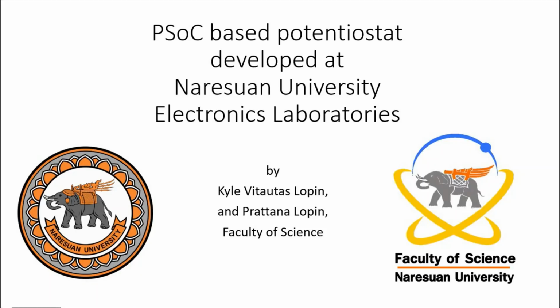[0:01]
In this video, I'll show how to develop a potentiostat from a programmable system on a chip. This potentiostat was developed at Naresuan University Electronics Laboratory by Kyle and Pratana Lopin in the Faculty of Science.
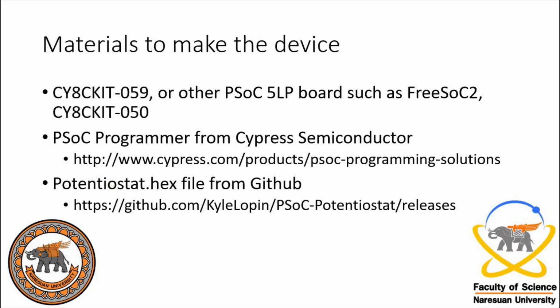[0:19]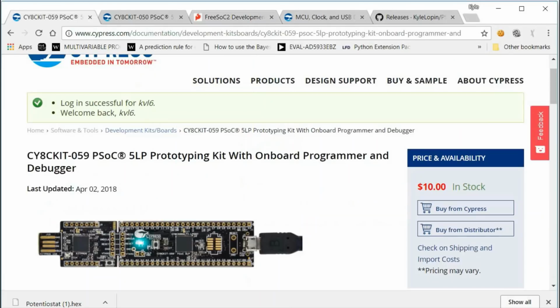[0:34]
To get started, we're going to need a PSoC 5 LP board. In this video, I'll show how to use a CY8CKIT-059 to make the device. You can also use the CY8CKIT-050 or FreeSoC 2. So the 059 kit is only $10 at the Cypress Semiconductor store. You can also find it at other electronics distributors such as Mouser and DigiKey, but the price may vary.
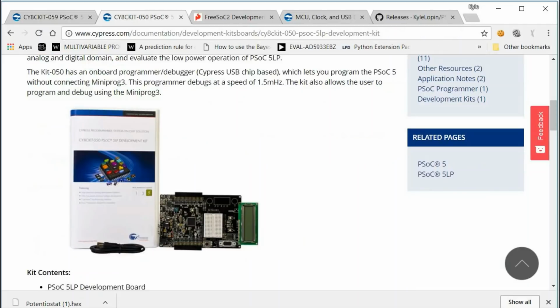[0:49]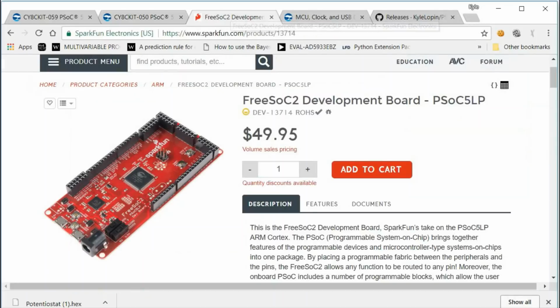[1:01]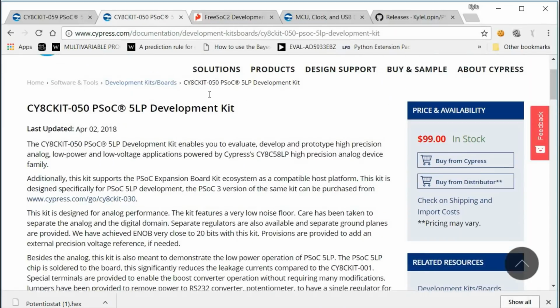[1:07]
You can also use the CY8CKIT-050, but it does cost more. But it does have some peripherals such as an LCD that you can use to develop, or the FreeSoC 2 from SparkFun. For this board and the CY8CKIT-050, you will not have to solder any parts on as the headers are already soldered on these devices.
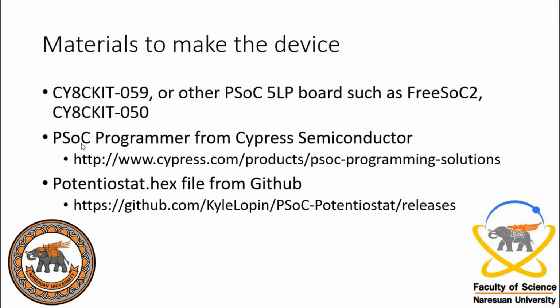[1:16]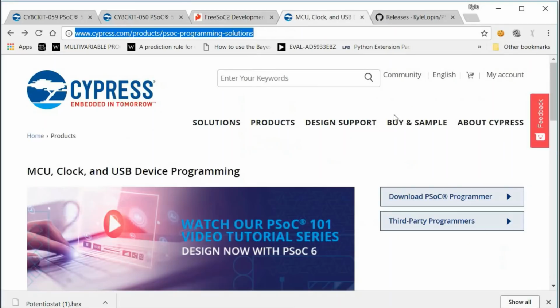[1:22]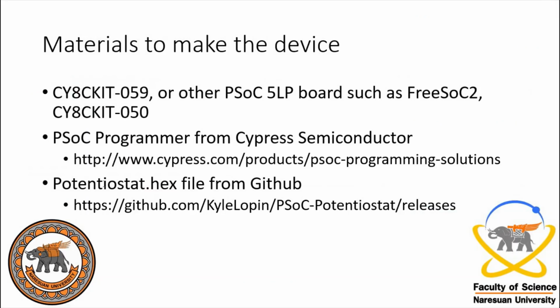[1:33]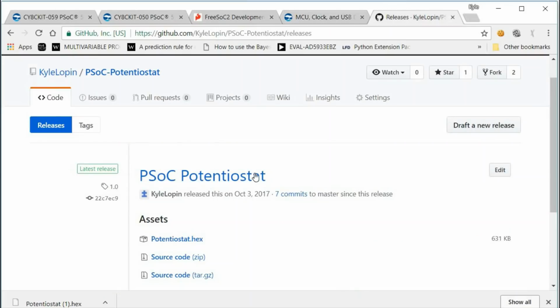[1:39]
The other thing we'll need is the PSoC Programmer from Cypress Semiconductor. You can get it from this webpage and the link will be in the description below. So you have to download here. You will have to sign in to Cypress Semiconductor to download it, and you'll also need the Potentiostat.hex file, and you can find that at my GitHub repository. So I will be doing the version 1.0 here, but updates may be loaded in later that you can look for. A file of this will also be listed with the PLOS One paper that you can grab from there.
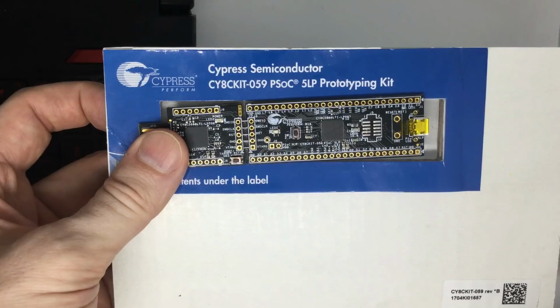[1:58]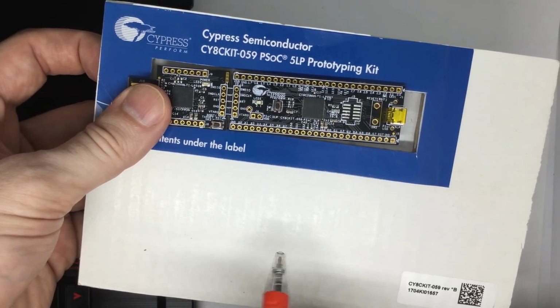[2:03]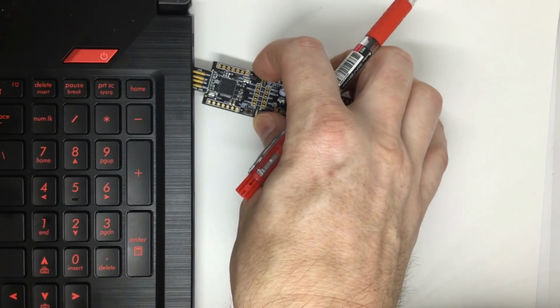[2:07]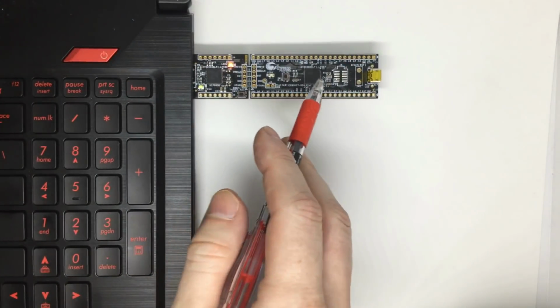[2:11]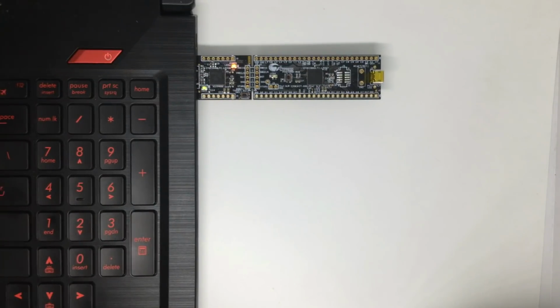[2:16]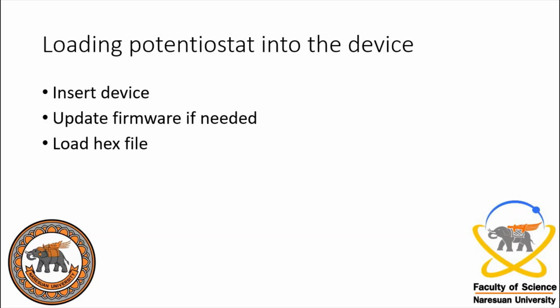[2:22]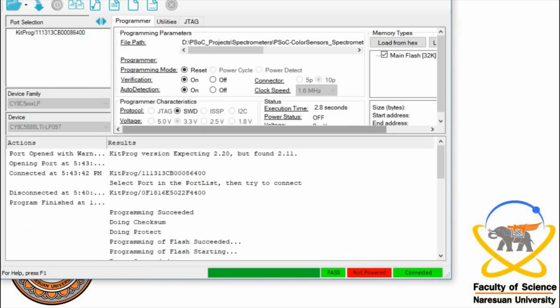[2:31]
So now you take the PSoC 5 LP development board and you plug the male end into the USB port of the computer, and now we're ready to program the PSoC 5 LP. So now the device is inserted into the computer. You will wait for some pop-ups if the driver is installing. Then you can go to PSoC Programmer, and if it's a new device, it will usually say that this programmer is currently out of date and you have to update the firmware on the programming device. So you click OK.
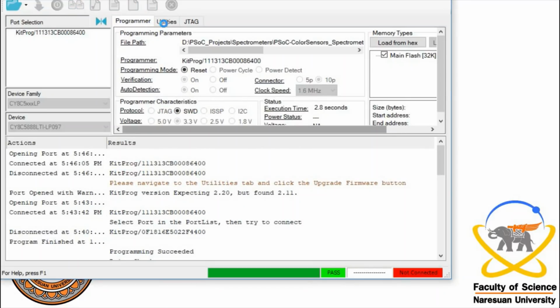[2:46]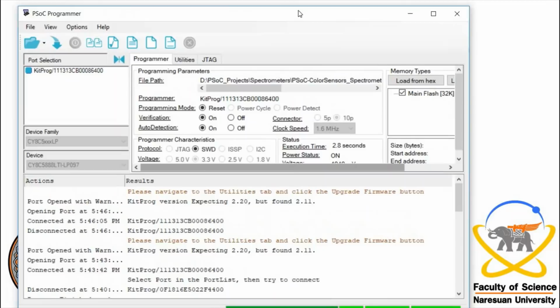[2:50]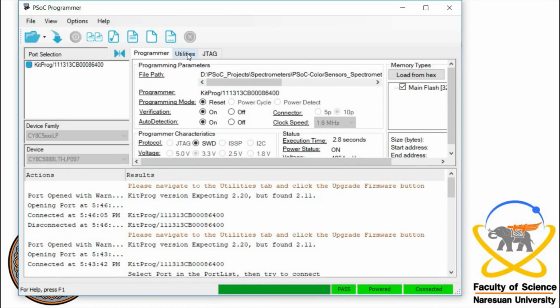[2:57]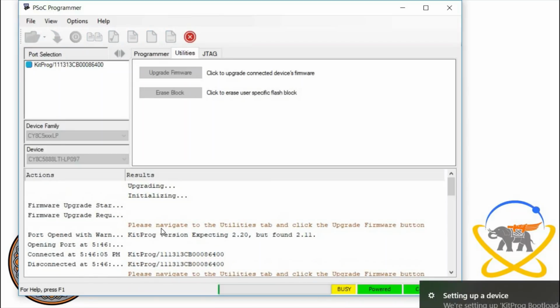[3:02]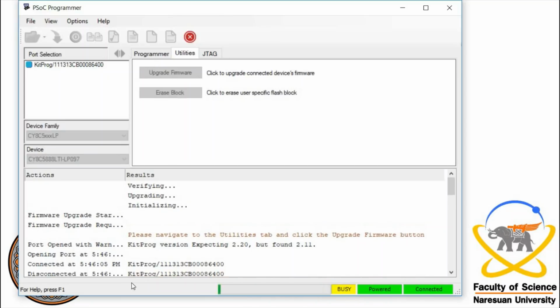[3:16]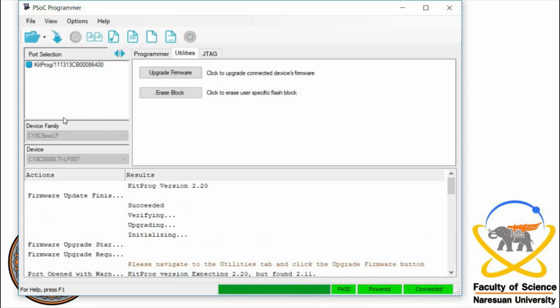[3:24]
You want to make sure that it's connected. And now to update it, we go to Utilities, Upgrade Firmware. Now it's verifying it. Okay, the device is now ready.
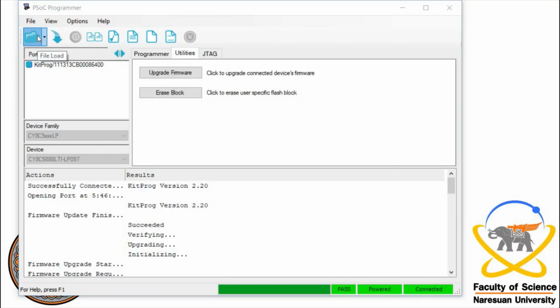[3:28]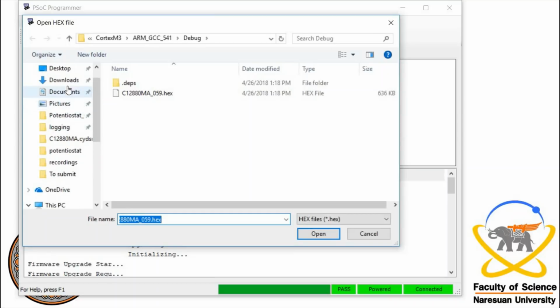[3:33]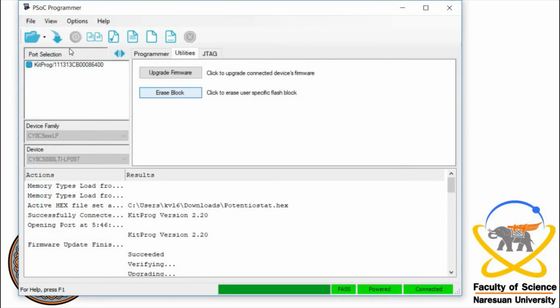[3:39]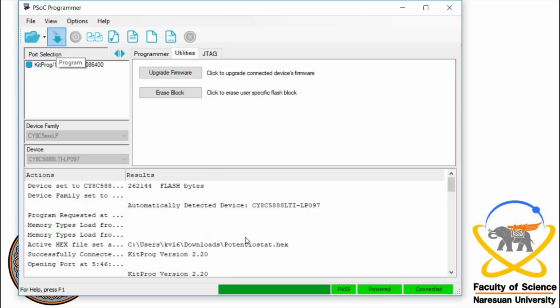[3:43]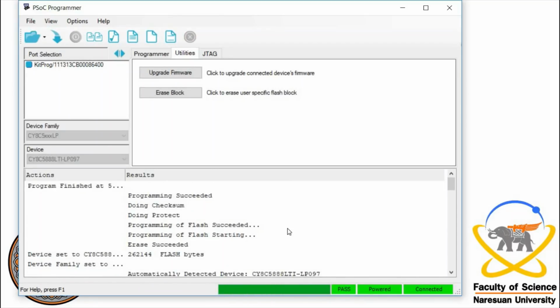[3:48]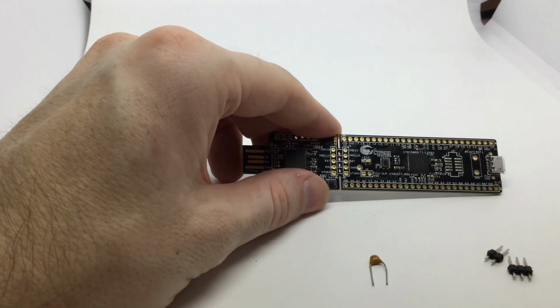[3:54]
So we're going to load the hex file. So we're going to go File, Load. We're going to go to Downloads, and we're going to get the hex file that we got previously. We're going to open it and then program. And now the potentiostat is programmed into the PSoC 5. Okay, now we have the potentiostat programmed into the PSoC 5.
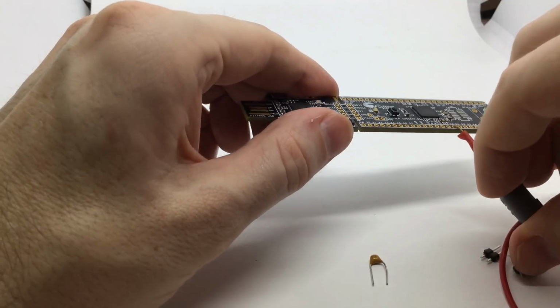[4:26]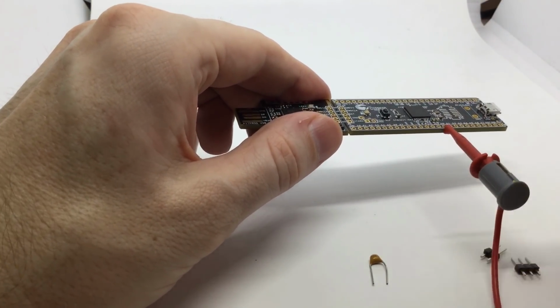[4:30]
We're going to add a capacitor between a ground pin and pin 3.1 so that we can use the 12-bit DAC with a 1 millivolt resolution. And also to connect the electrodes, so we have the reference electrode at pin 3.4, the counter electrode at pin 3.6, and the working electrode at pin 0.0. So either you can use easy clips, such as these, and these can connect straight to the pin. And now you can connect the electrode using these.
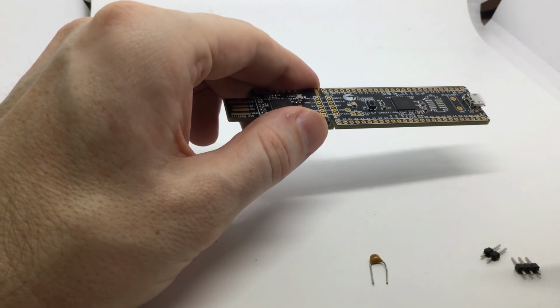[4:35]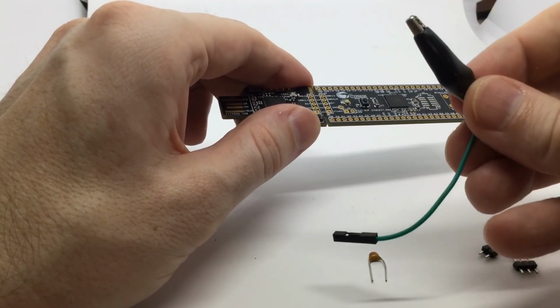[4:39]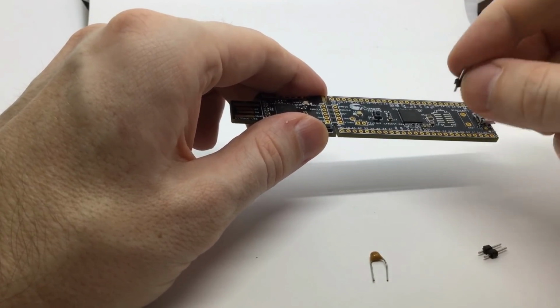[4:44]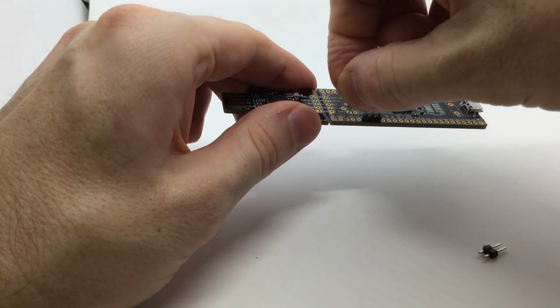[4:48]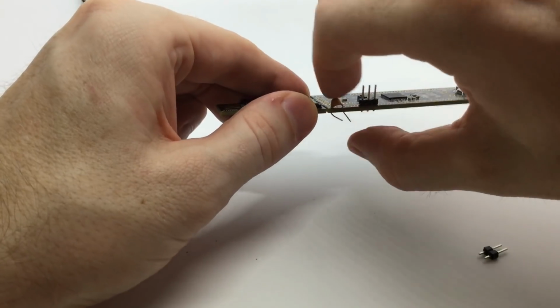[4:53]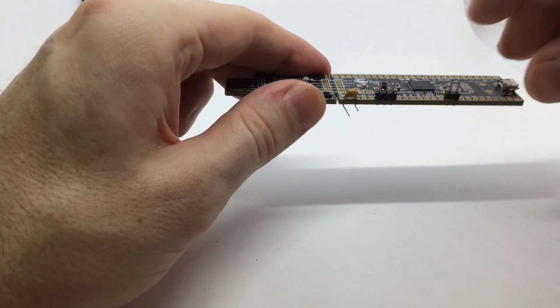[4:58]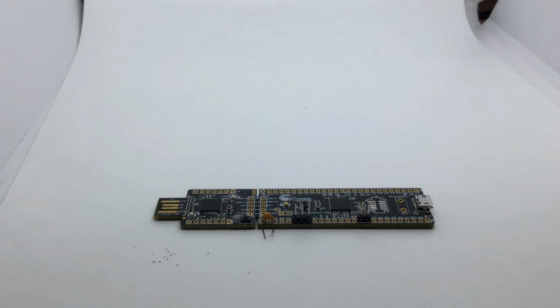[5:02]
Or sometimes I will also use alligator clips attached to female headers. So to use these and to interchange them fast, I use these headers here. So we're gonna add these in, and the capacitor for the DAC. And if you bend the capacitor leads, it will hold it in place while you solder it. And now we have this. Now I'll start the soldering gun and we'll solder everything together.
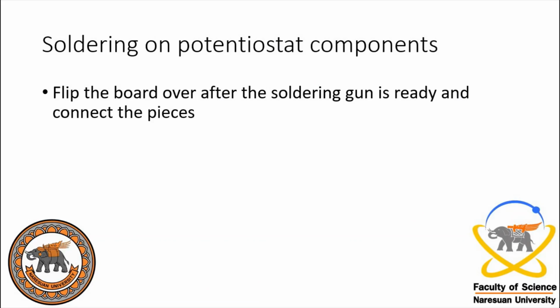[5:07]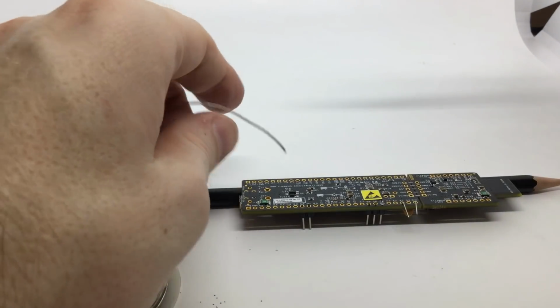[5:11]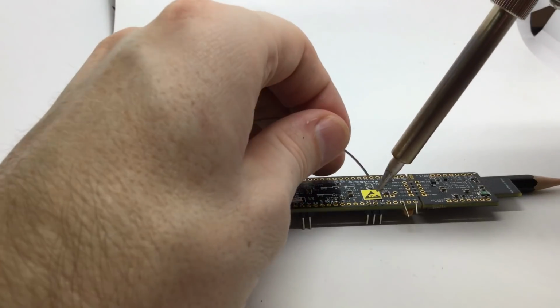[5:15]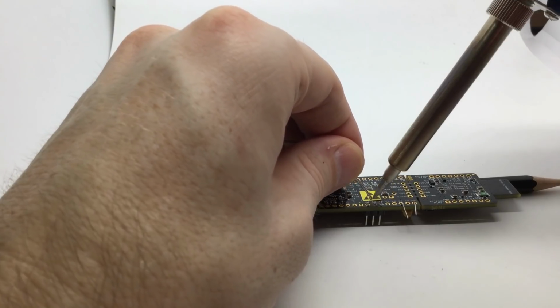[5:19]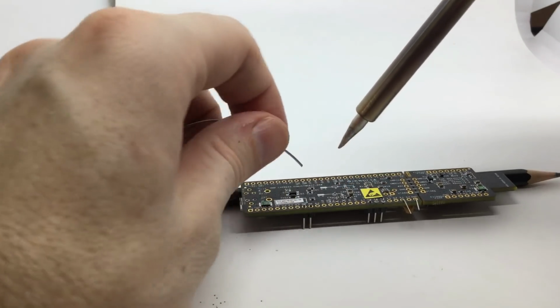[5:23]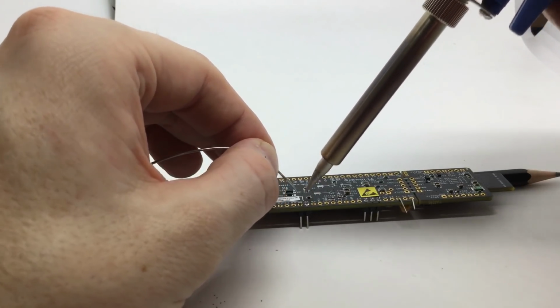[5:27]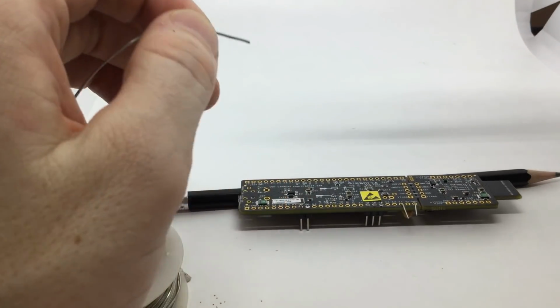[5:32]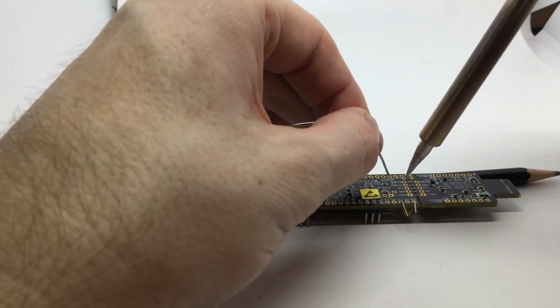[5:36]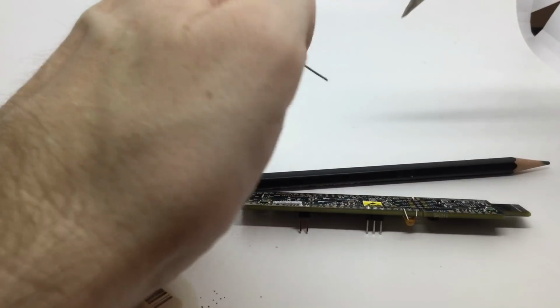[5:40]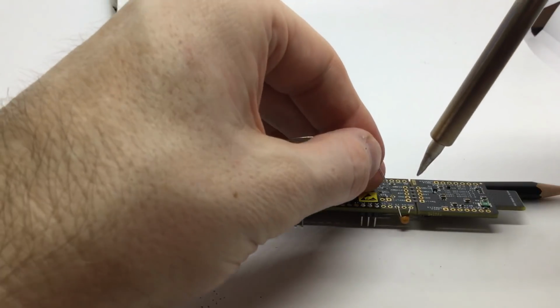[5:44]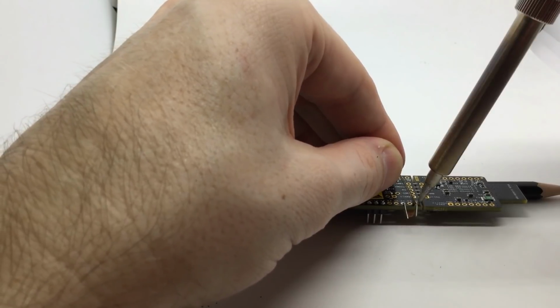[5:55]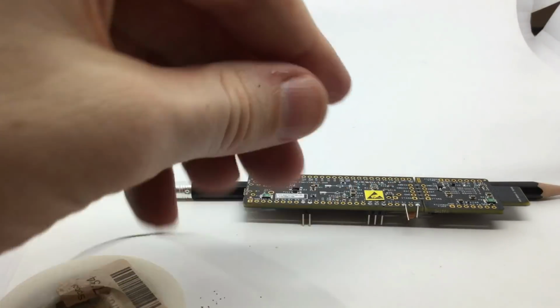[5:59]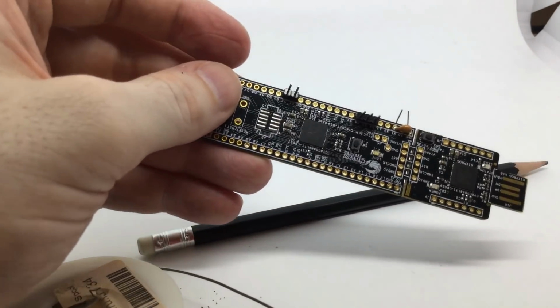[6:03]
Okay, now when your soldering iron is ready, you can solder the headers on. So I already soldered one. There's the other one. And the soldering iron is maybe a little too hot, but it's okay. And then I'll solder on the capacitor. Okay, all of the headers and the capacitor are on now. I'm gonna cut these leads off because I don't need them anymore, and now the device is ready to be used.
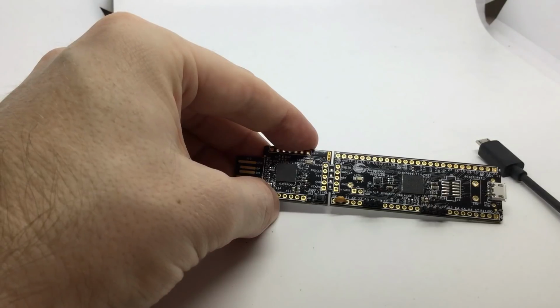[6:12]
Okay, so now we have the device made. When I went to test the device, I realized in the last video I put the headers in wrong. I put it in 01 and 02. So I added a new header to 00 and 15.5. That's fine. You can add as many extra ones as you want as long as you have pin 00, so you can connect the working electrode to it.
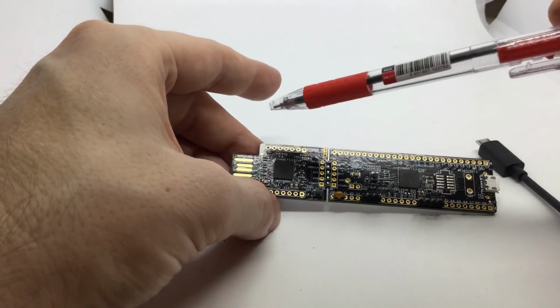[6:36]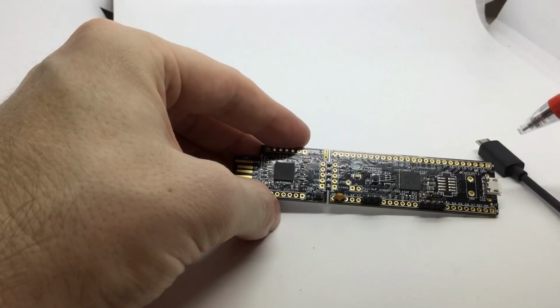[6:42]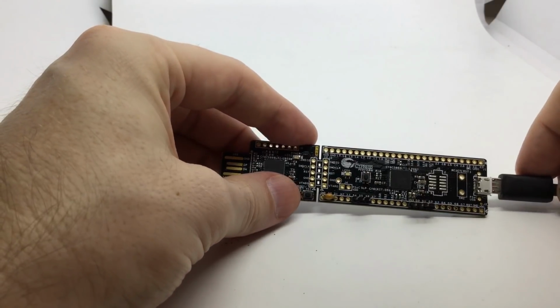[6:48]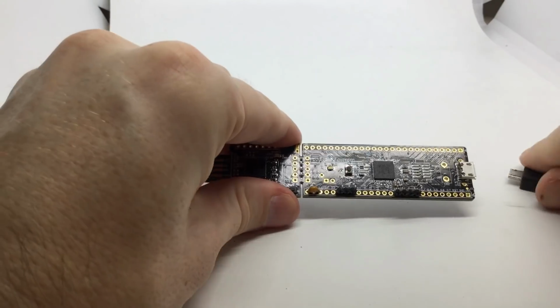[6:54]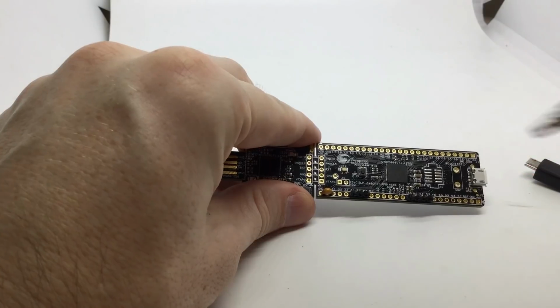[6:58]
So we programmed through this end of the development board, but to connect the device to the computer to use the potentiostat, we use this USB port. So we're gonna connect a micro A USB port to this end. But this is a development board, so you have to watch out. There are exposed reset pins. And if you're doing electrochemical experiments, there's some solution that could interfere with the electronics.
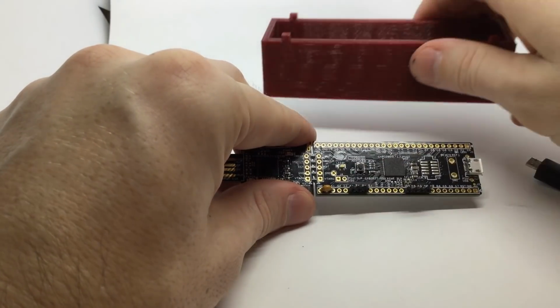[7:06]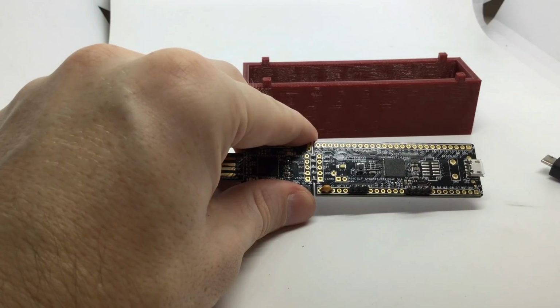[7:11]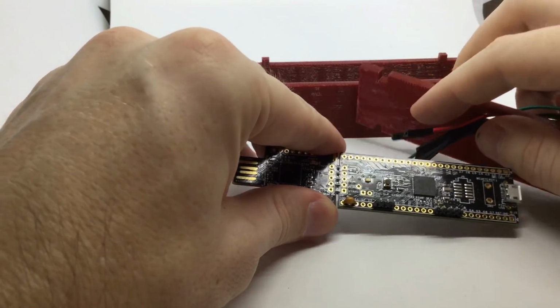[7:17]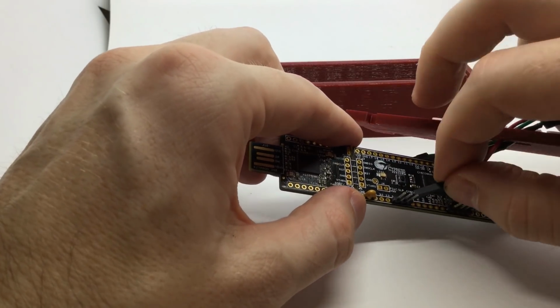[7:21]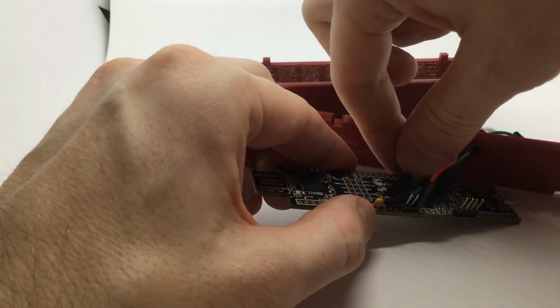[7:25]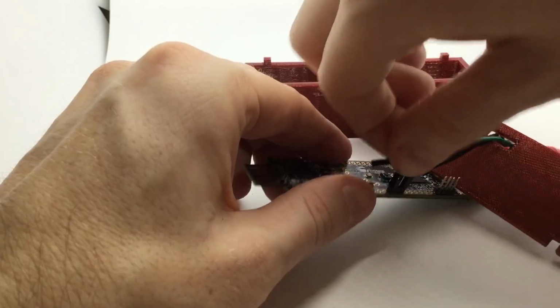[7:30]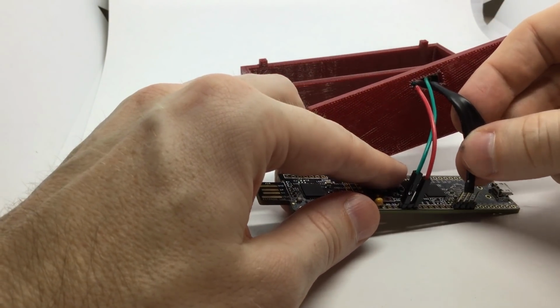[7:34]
So I like to use an enclosure. So to use the enclosure, and I'll have a link to this in the description if you want to print this out, it's just in a 3D printer. So I put the electrodes to the enclosure top first, and then I connect the counter to pin 3-6, the reference to pin 3-4, and the working to pin 00.
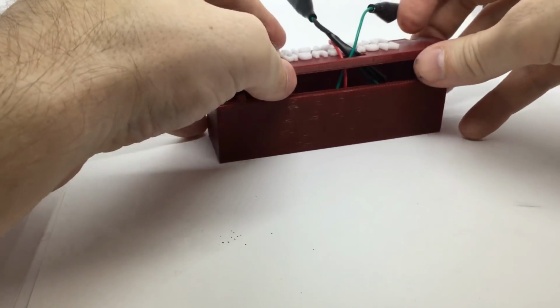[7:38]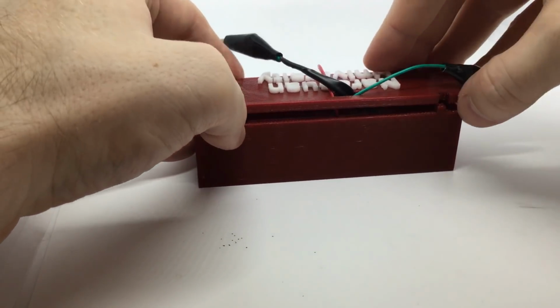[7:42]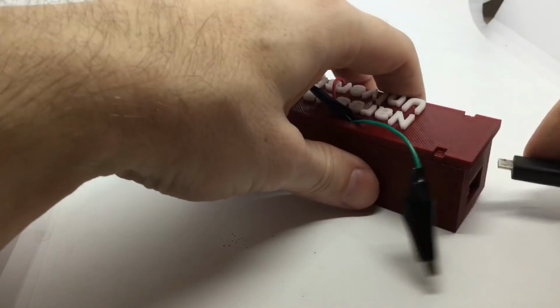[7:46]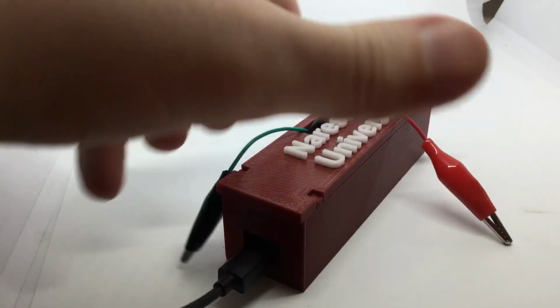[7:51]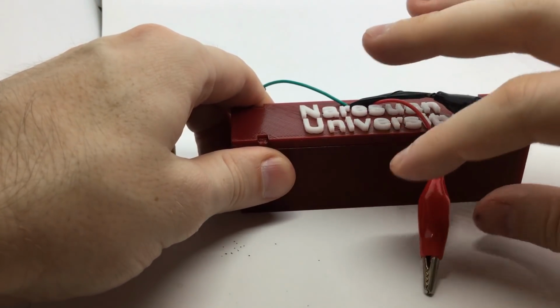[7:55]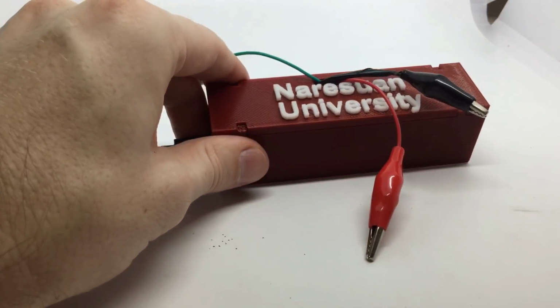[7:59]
So now I can put this in the enclosure, and we'll be looking to make a different enclosure with banana clips instead. And now you can connect this device to this USB port, and now you have a potentiostat that's working with the counter, reference, and working electrodes. So now we have the device plugged in, but we need to control it somehow.
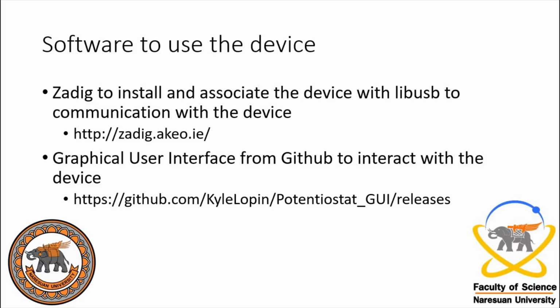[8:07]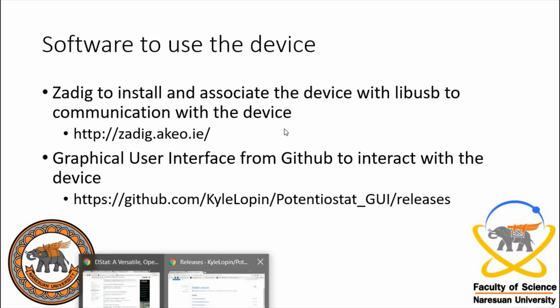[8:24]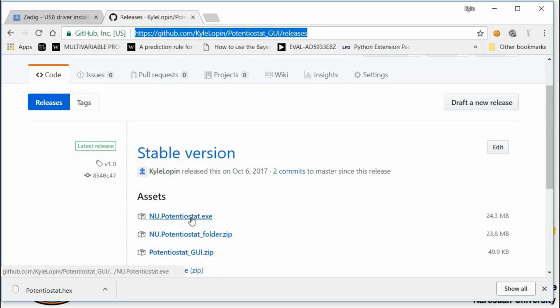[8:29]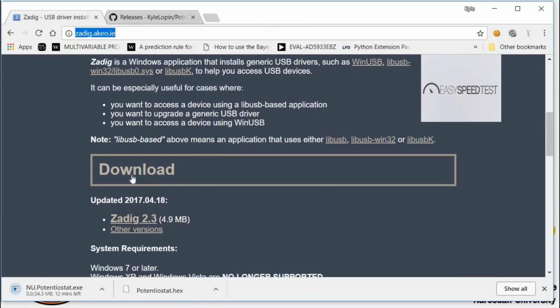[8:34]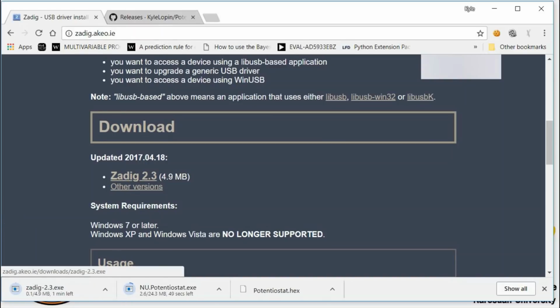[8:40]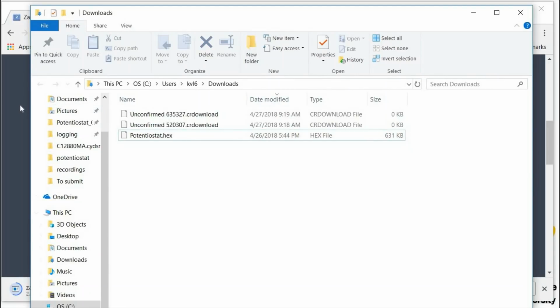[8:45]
So to do that, we made a graphical user interface for the potentiostat, and it can be found at GitHub at this link that will be in the description below. But to use the USB port through it, we're going to use Zadig to install the driver for it. So you can go here to find the potentiostat graphical user interface. So we'll download this, and we'll also download the Zadig. We'll wait for those to download.
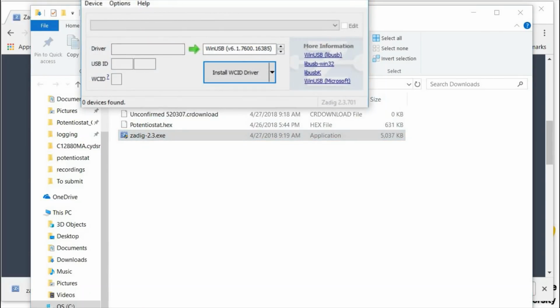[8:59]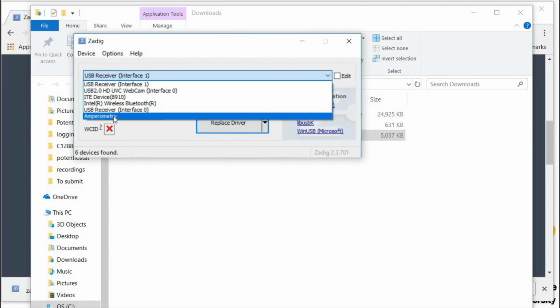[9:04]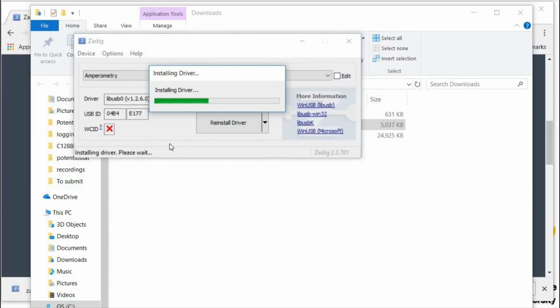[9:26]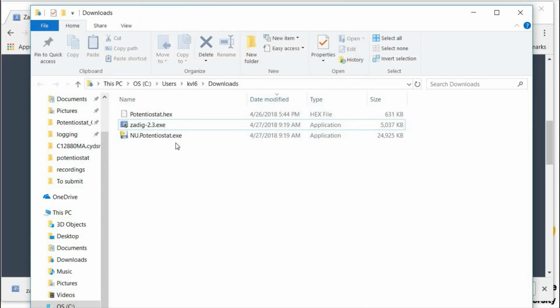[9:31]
So you run Zadig. You allow it to make changes, then you go to options, list all devices, and you will see either amperometry or NU potentiostat listed. And the driver here is already associated with it is correct, but if this does not say libusb0, you want to do libusb win32, and then this will say install driver. Now the graphical user interface will associate with the device.
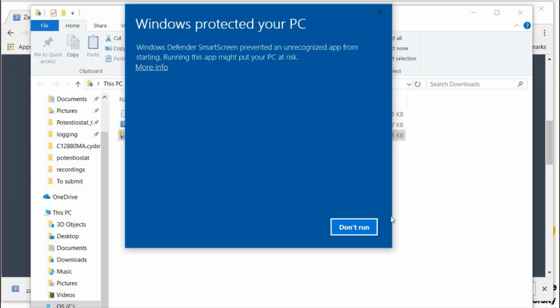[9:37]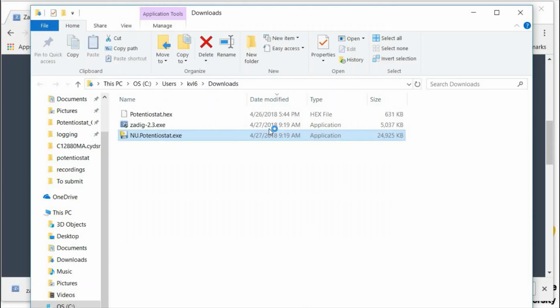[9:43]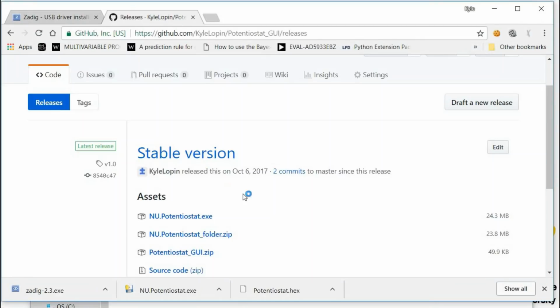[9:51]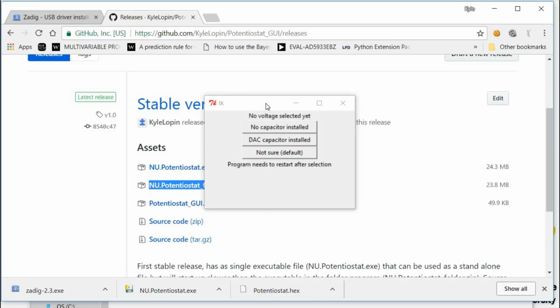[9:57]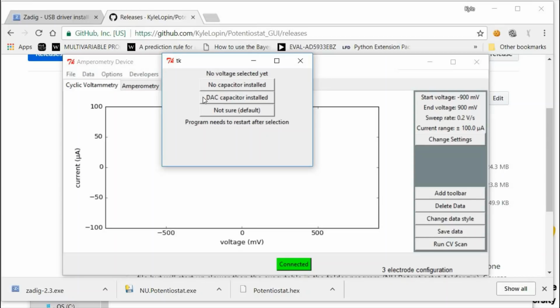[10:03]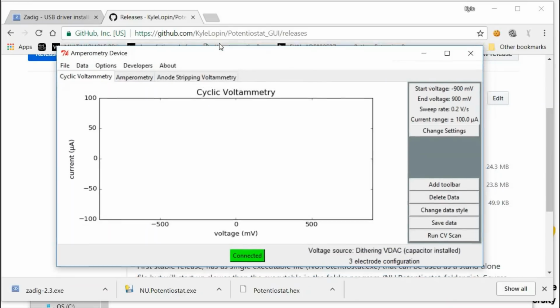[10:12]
So now you can just run this program and associate to the device. Windows is blocking it sometimes, but you just click through to run anyways. There is also a folder that you can use that is slightly faster. So when the program first pops up, it will ask you if the 12-bit DAC capacitor is installed or not. So because we soldered it on, we click DAC capacitor installed. And now this is the graphical user interface for the potentiostat.
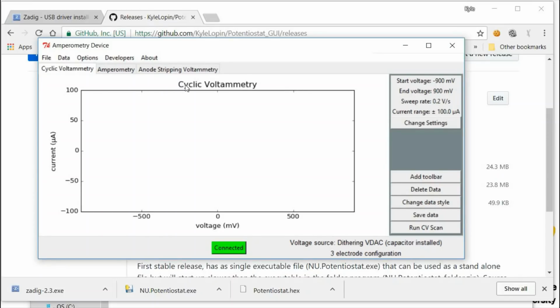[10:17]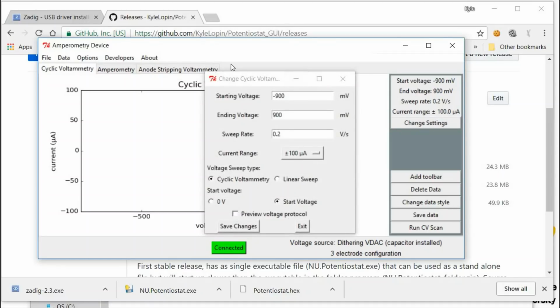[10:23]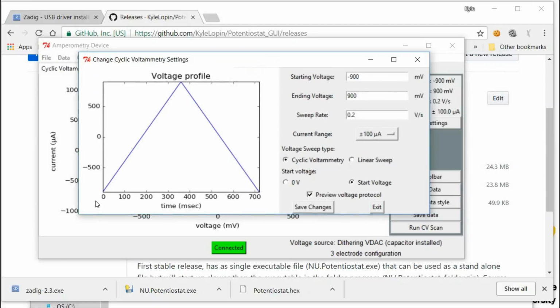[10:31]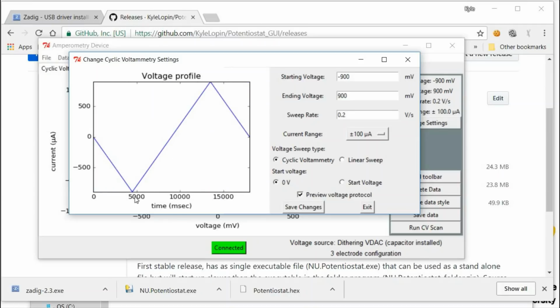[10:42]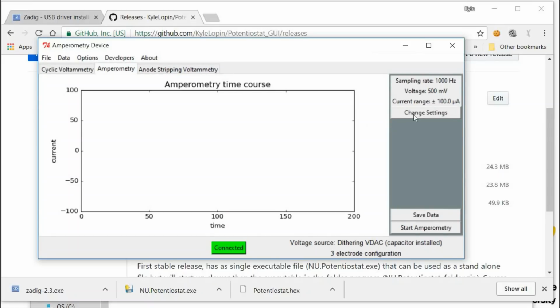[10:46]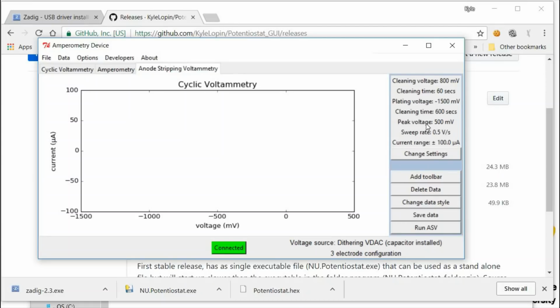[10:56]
So it currently can perform cyclic voltammetry, and you can change the different settings. So you can change the start voltage, end voltage, the sweep rate, and there are different current ranges. You can view the voltage profile as a function of time by clicking on here, and you can do cyclic voltammetry, linear sweep, and for cyclic voltammetry, you can start at 0 volts if you want. It also can perform amperometry, so you just set the voltage and the current range. The sampling rate is currently fixed at a kilohertz. Or you can do anode stripping voltammetry, where you can set the cleaning voltage, time, plating voltage, and the peak voltage in the sweep rate.
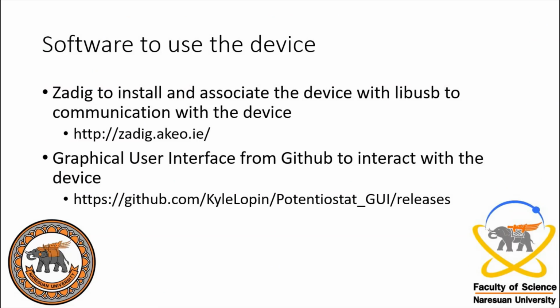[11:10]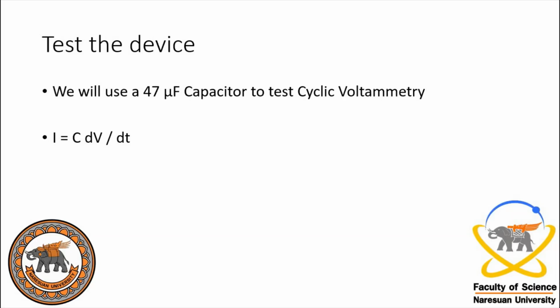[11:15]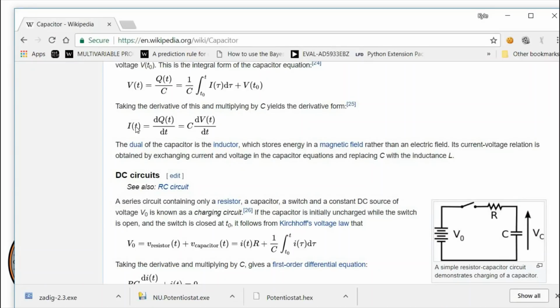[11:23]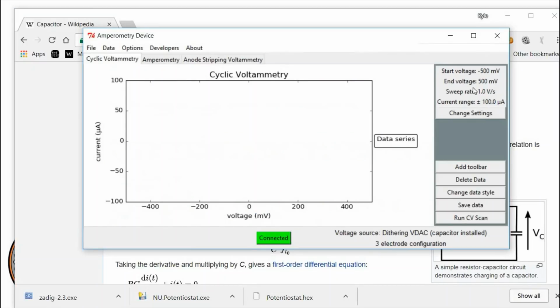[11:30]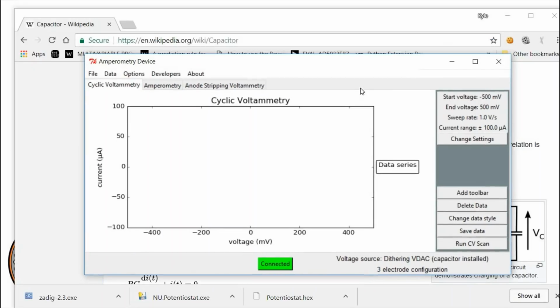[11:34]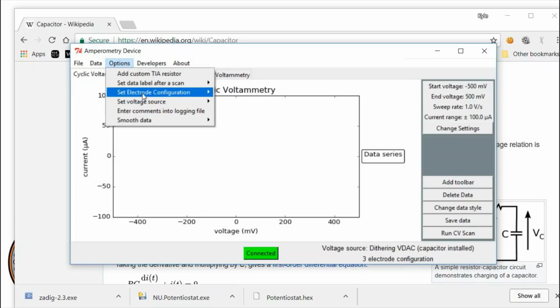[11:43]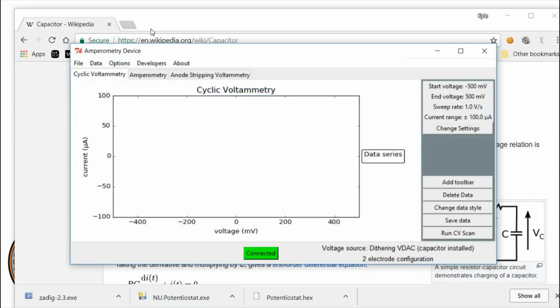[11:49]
So now that we have the device connected in the controller, we're going to test it using a 47 microfarad capacitor to test the cyclic voltammetry function. So the current through a capacitor is the capacitance times the change in voltage with time. So if we give a 1 volt per second sweep rate, this on a 47 microfarad capacitor, we should see a 47 microamp current. So to do that, we're going to change it to the two electrode configuration. So in options, you can change between the two and the three electrodes, and it will update here so you see what it's set for.
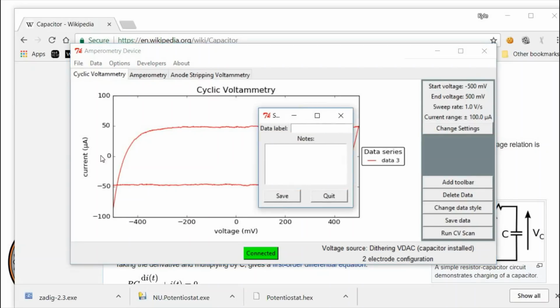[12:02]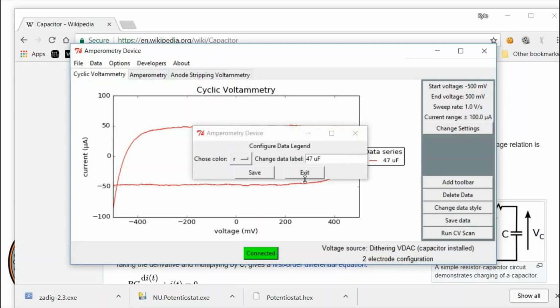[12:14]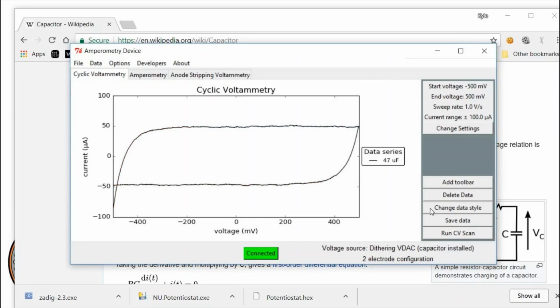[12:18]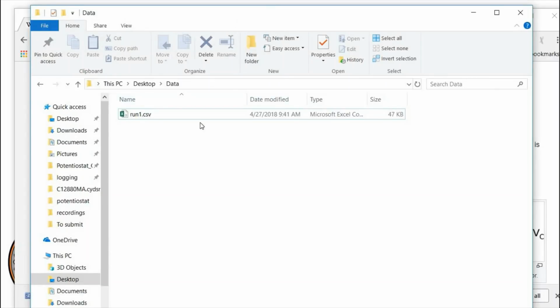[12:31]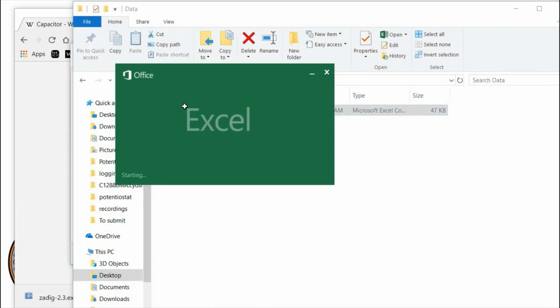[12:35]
And then you click run, and the scan rate's already set. And now you see the characteristic sweep rates. So you can put in a label. You can also put in notes here. You can change the label here if you want, or change the color and save data. And the data should be saved as a comma separated values. And then if you go to the folder, the data is now saved, the voltage versus the current.
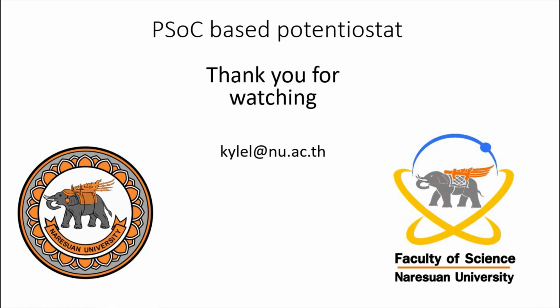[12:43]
So that is how to make a potentiostat based on a programmable system on a chip.